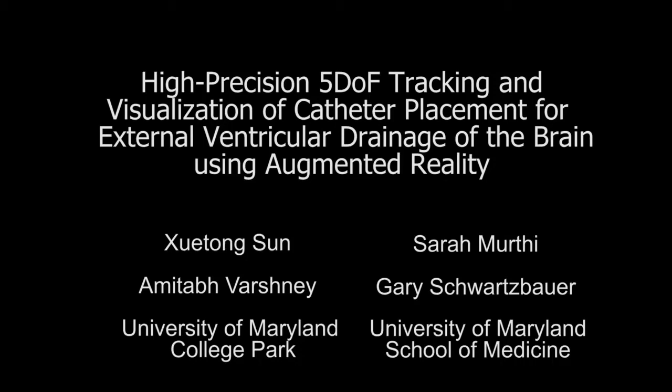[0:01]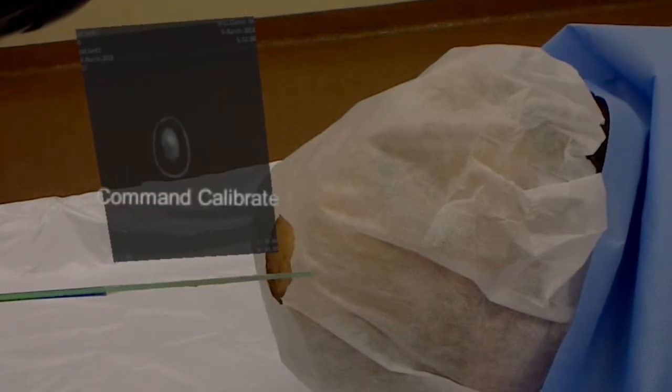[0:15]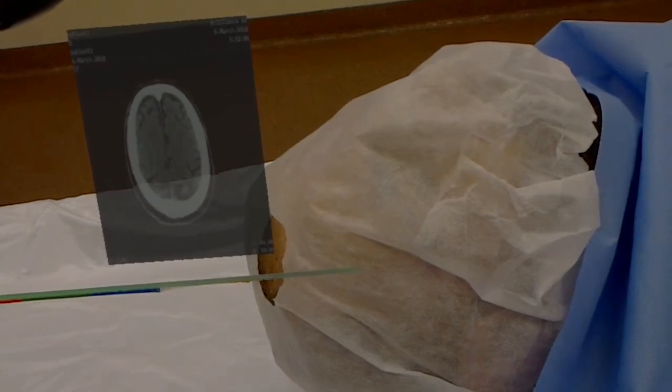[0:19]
This is a collaboration between the computer scientists at the University of Maryland, College Park, and the surgeons at R Adams Cowley Shock Trauma Center, University of Maryland Medical Center. In this project, we developed an augmented reality surgical tracking and visualization system that can assist surgeons in catheterization.
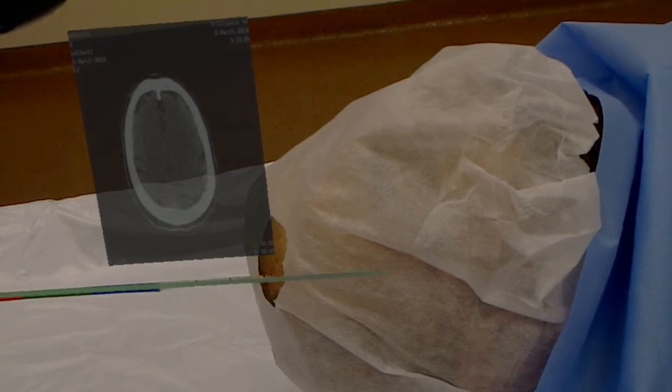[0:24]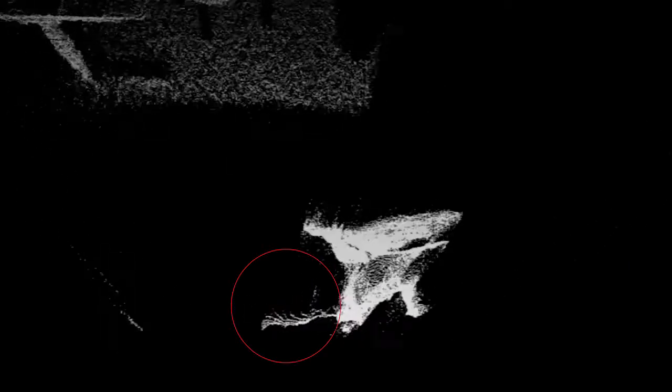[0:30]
Conventionally, catheterization in surgeries relies heavily on the surgeon's experience, as the catheter becomes hard to locate when it has entered the patient's body. Due to its thinness, it is difficult for depth sensors such as Kinect to detect the catheter.
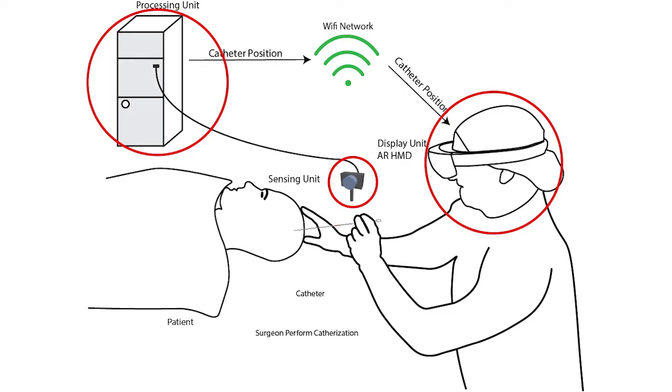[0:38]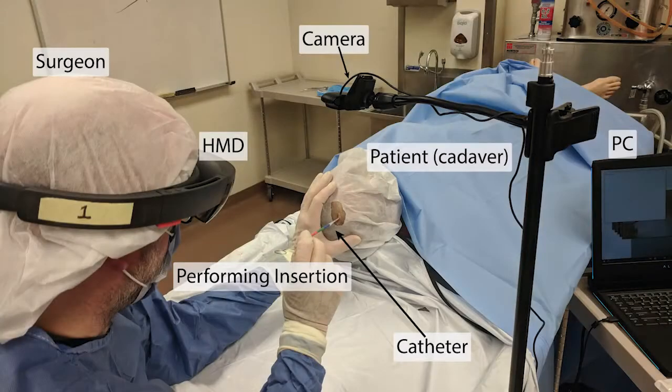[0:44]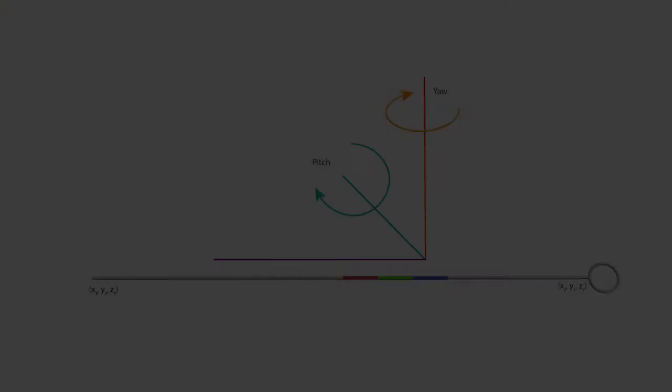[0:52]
Our system consists of three components: a sensing unit, a processing unit, and a display unit. We use an off-the-shelf Logitech C920 web camera, a laptop computer for processing, and a Microsoft HoloLens head-mounted display. There are three color bands attached to the catheter that will be used for tracking. This modification makes minimum change to the catheter's shape, weight, and functionality.
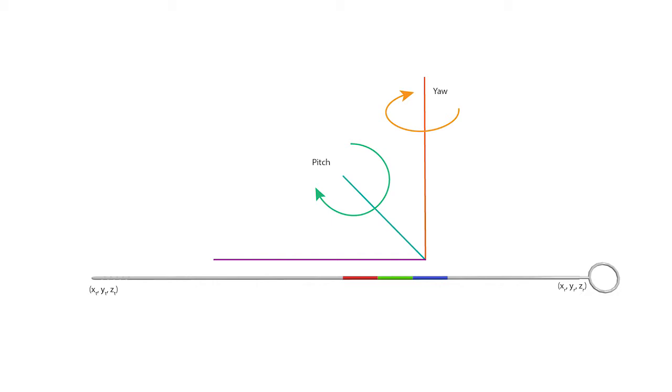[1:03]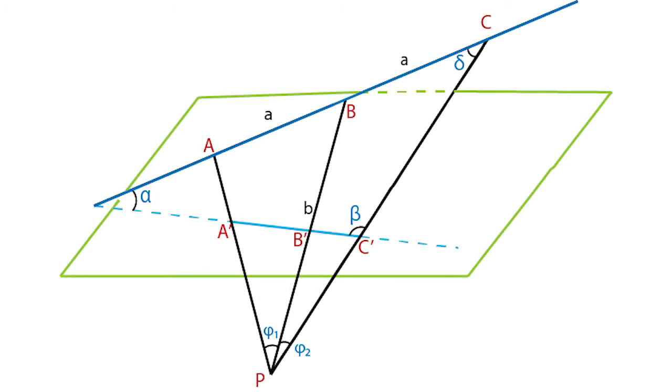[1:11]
We can calculate the 5 degree of freedom information of the catheter from the color bands' image. Given the coordinates of the color band endpoints in the image and the length of the color bands, our problem can be seen as a special case of the perspective 3-point problem. We calculate the angle alpha formed by the catheter and its image on the image plane and use it to determine which solution to the P3P problem to use.
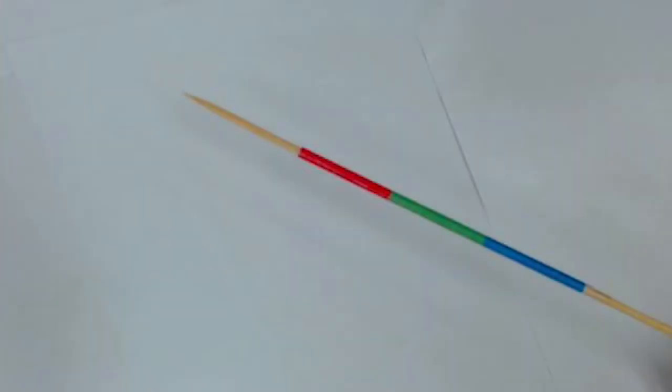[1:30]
Locating the catheter requires the positions of the color bands in the image. Our image processing starts with undistorting the image and using predetermined color thresholds to find the pixels belonging to each color band. The catheter axis is calculated by fitting the pixels into a line. We then calculate the gradient along the axis, getting strong responses at the endpoints of each color band. After smoothing and thresholding, we find the endpoints as the weighted centers of the connected components of the gradient image. The position of the catheter is calculated for each frame.
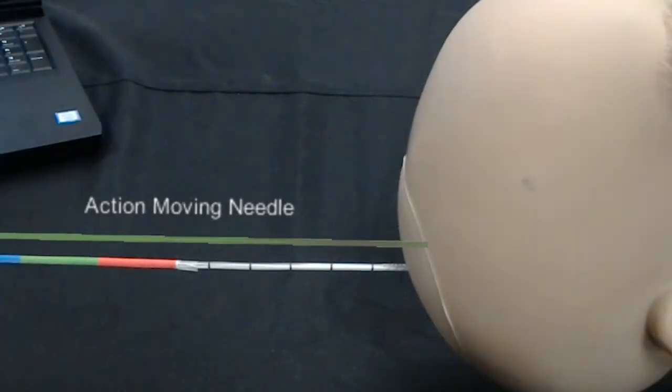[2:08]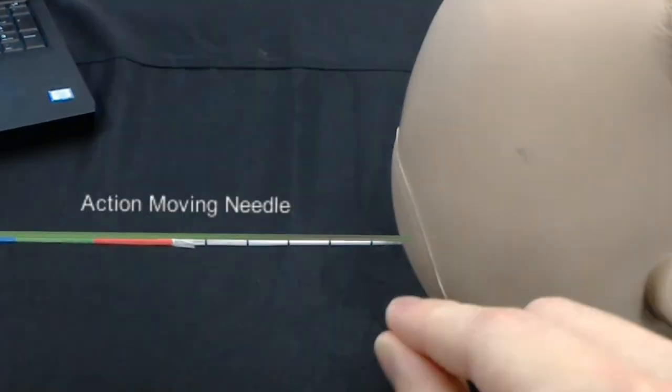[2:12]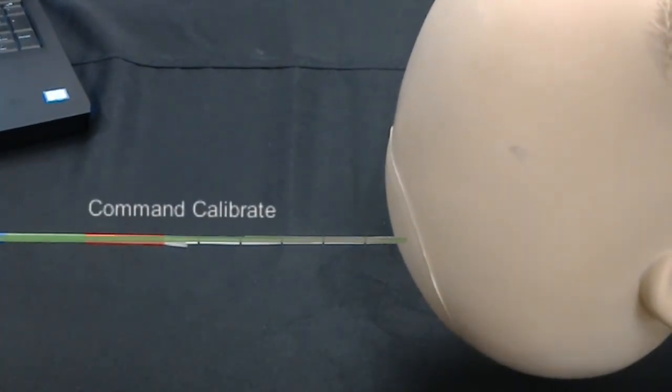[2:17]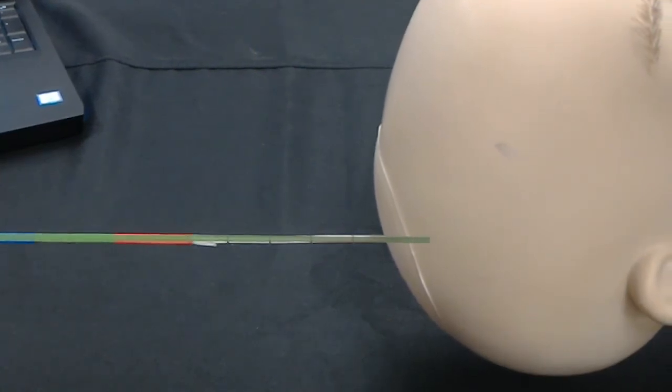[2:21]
Our system is easy to use. First, the user uses hand gestures to move the virtual catheter in the AR application to overlay the real catheter. Then, a voice command triggers the system to find the transformation from the camera space to the HoloLens's coordinate system. After this, the catheter is tracked in the subsequent frames.
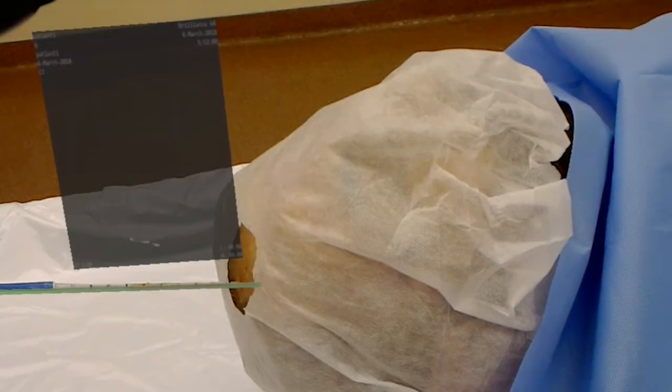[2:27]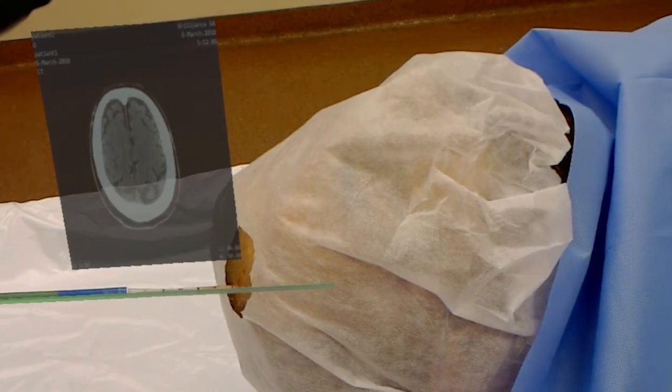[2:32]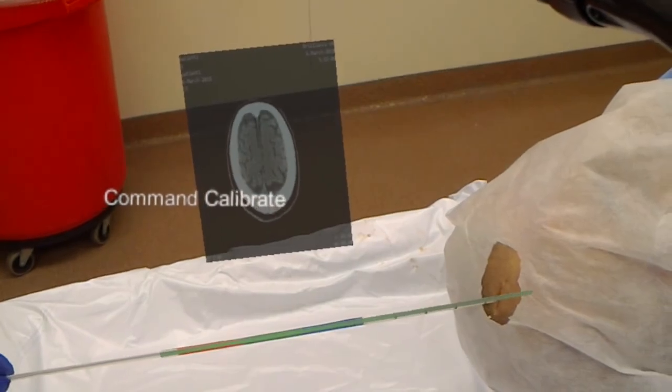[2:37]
We took the system to be tested by neurosurgeons in a realistic experimental environment. An external ventricular drainage procedure is performed using our system on a cadaveric head.
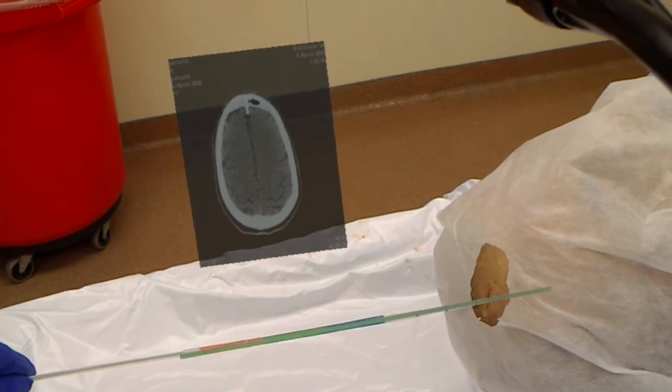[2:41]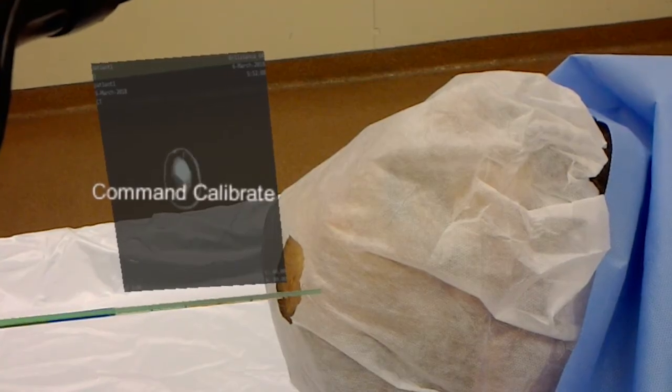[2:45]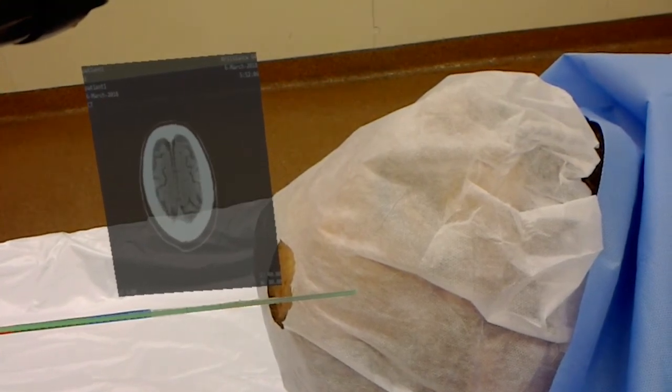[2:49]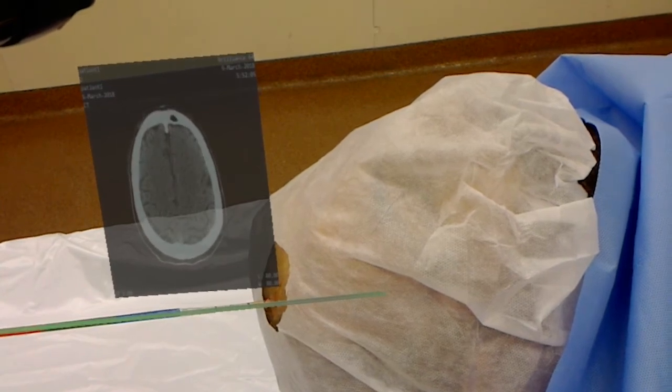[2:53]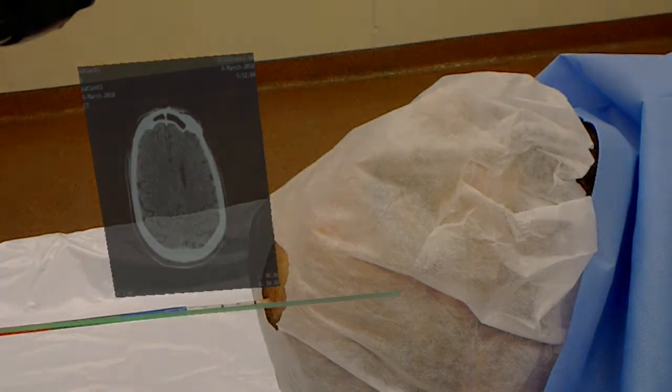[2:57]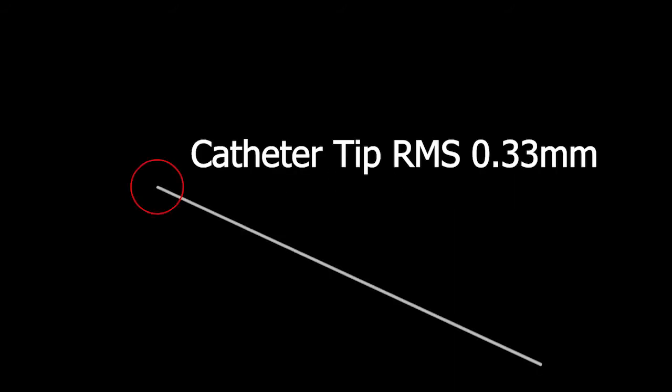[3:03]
We test the stability of the tracking algorithm by tracking a static catheter. Noise in the image causes the detected catheter to jitter. The root mean square of the change in the calculated tip is 0.33 mm.
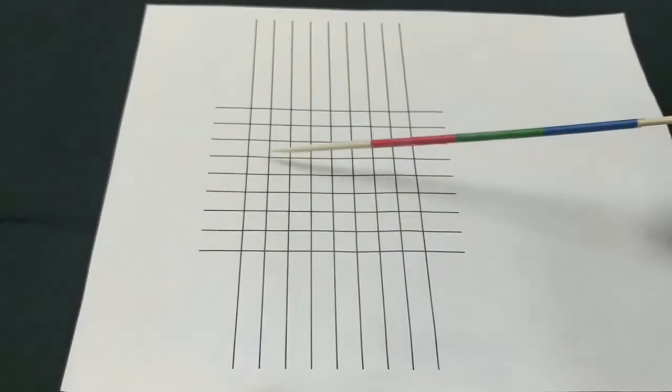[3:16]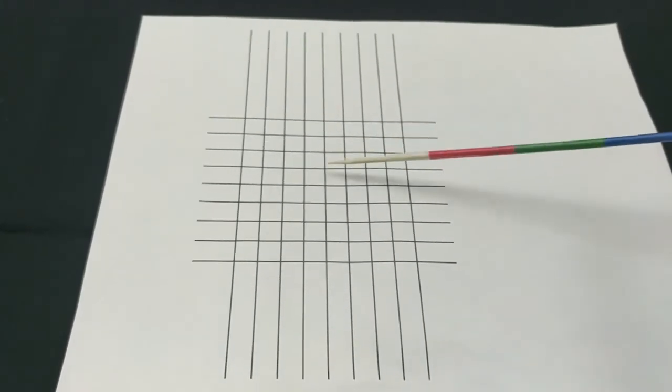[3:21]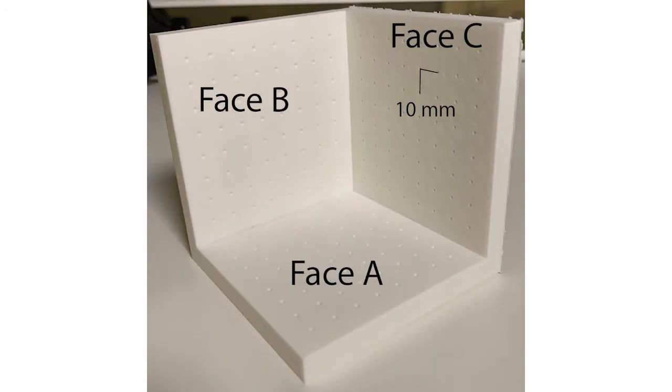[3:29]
We then test our algorithm's accuracy by pointing the catheter tip at points over a 2D grid. We're able to achieve a 0.58 mm average accuracy in this case. We also test the accuracy on a 3D printed structure with 3 faces, each with hole grids. The accuracy on faces A, B, and C are 0.49, 0.93, and 1.12 mm respectively.
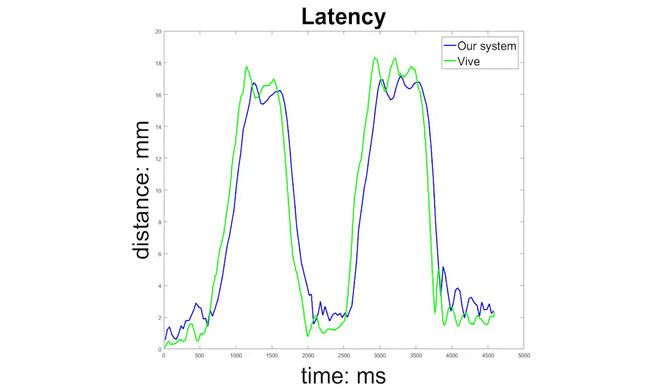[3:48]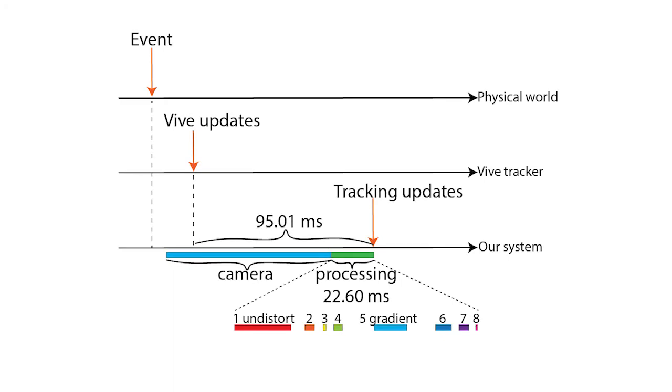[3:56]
We observe a latency of 95 milliseconds in our system. Our analysis shows that it takes our algorithm 22.6 milliseconds to process a frame, with nearly 80% of the time spent on rectifying the image and calculating the gradient along the catheter axis. Parallel implementation using GPU and cameras with low image capture time can greatly reduce latency.
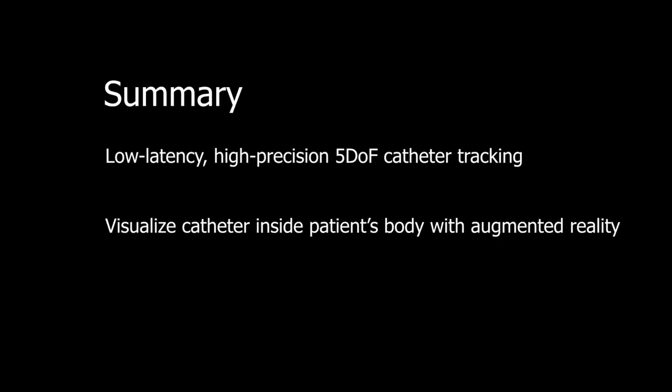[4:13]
To summarize, we developed a low-latency, high-precision 5 degree of freedom catheter tracking method. And with AR, we can visualize the catheter inside the patient's body, assisting surgeons in catheter placement.